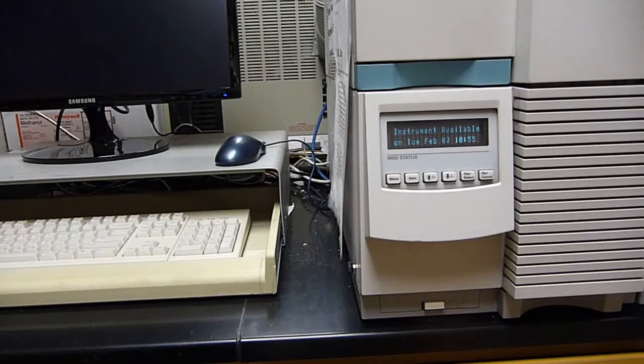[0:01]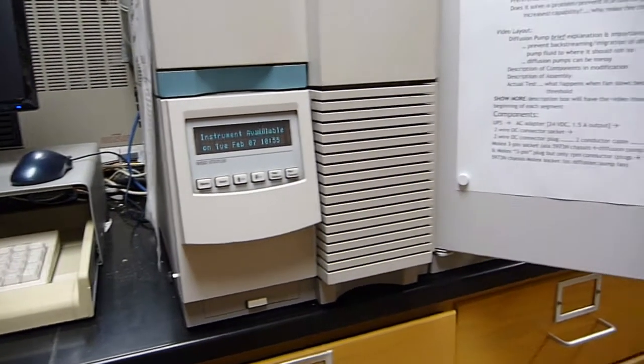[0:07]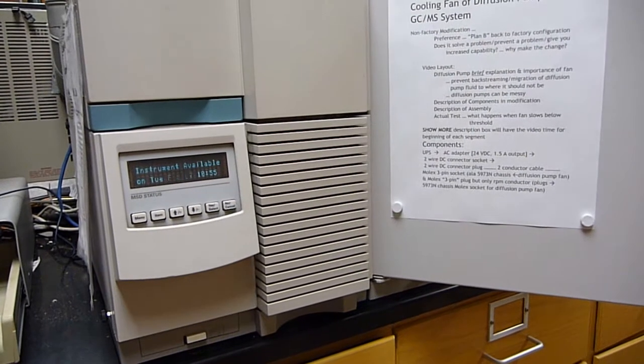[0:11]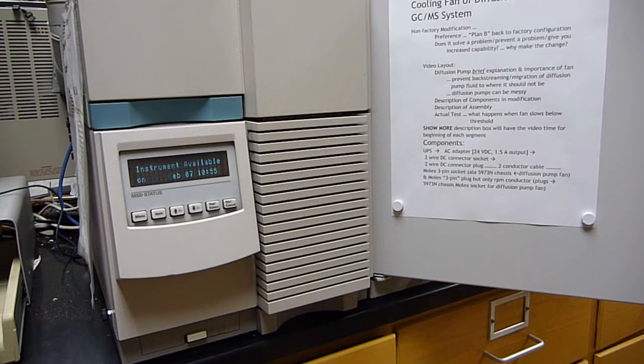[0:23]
This is our 5973 GC mass spec system, and this video is a more comprehensive description of a modification done over a decade ago in order to make the cooling fan for the diffusion pump more reliable and to help in the event of a power outage.
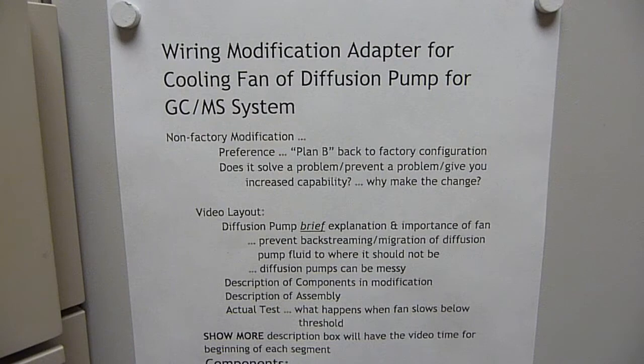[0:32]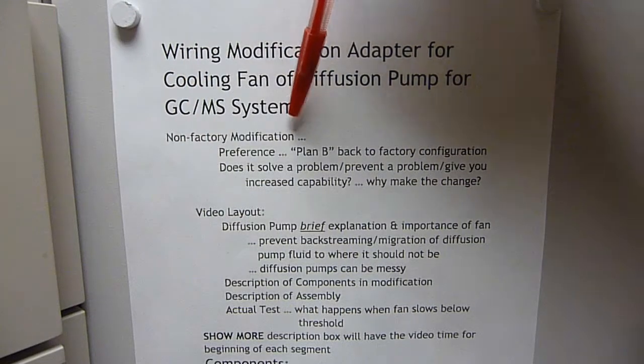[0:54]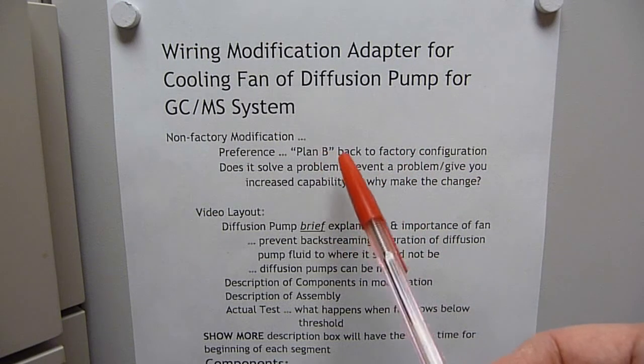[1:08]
So this modification is a wiring adapter that supplies the power to the cooling fan for the diffusion pump and also lets the instrument know what the RPM speed of the fan is. It's a non-factory modification, and the preference here is if you're going to do a non-factory modification, have a plan B in case the modification doesn't work out. And so the plan B is to be able to go back to the factory configuration.
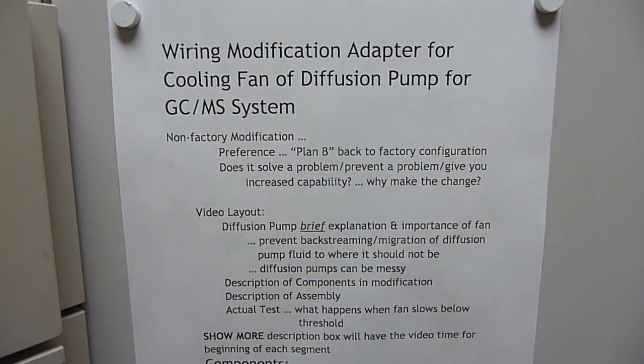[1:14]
And with any sort of a change or modification, we want to solve a problem or prevent a problem from occurring or give us increased capability. That's why we're making the change.
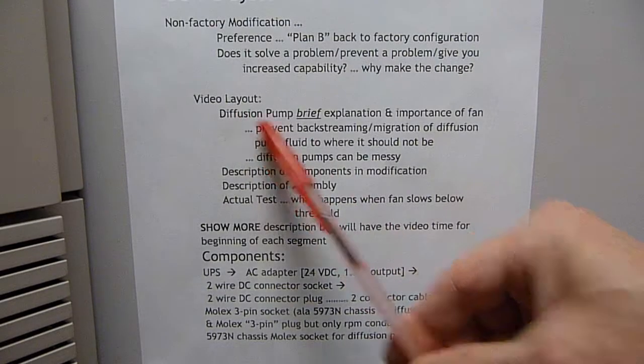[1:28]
The video layout is a brief explanation of a diffusion pump, followed by a description of the components used in the modification and the assembly of that, and then an actual test of what happens if the fan slows down below a certain threshold, and we'll see that the heater kicks off on the diffusion pump.
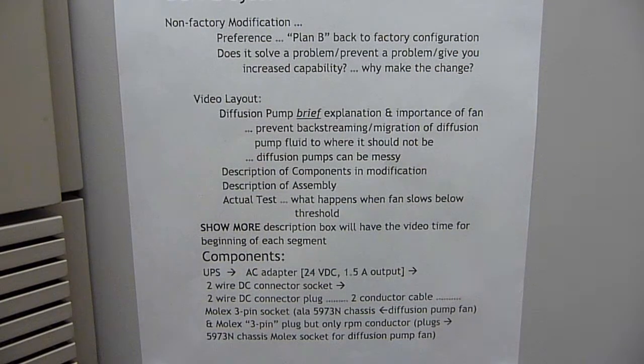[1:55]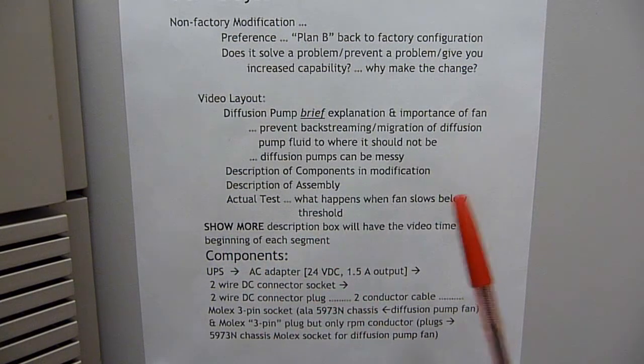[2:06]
And to make the video more user-friendly, in the show more description box on YouTube, there'll be the time of the video for when these different segments start. So you don't have to watch the whole video every time if you don't want to.
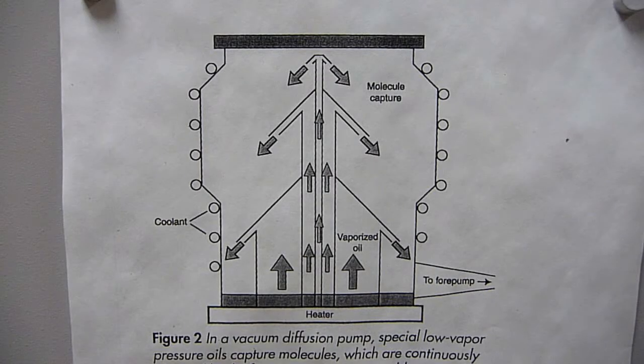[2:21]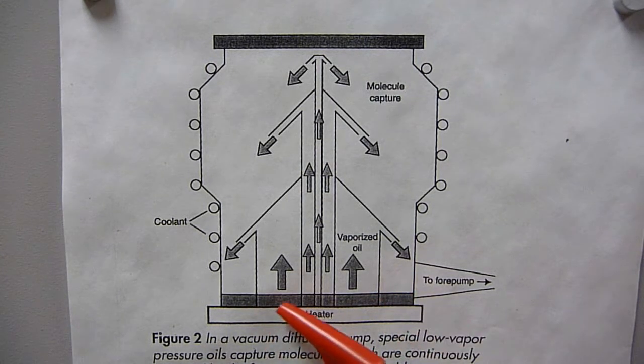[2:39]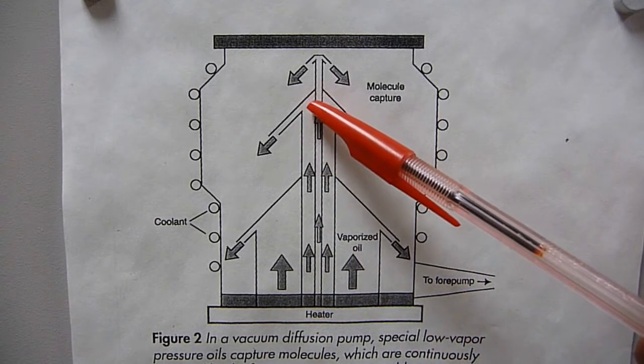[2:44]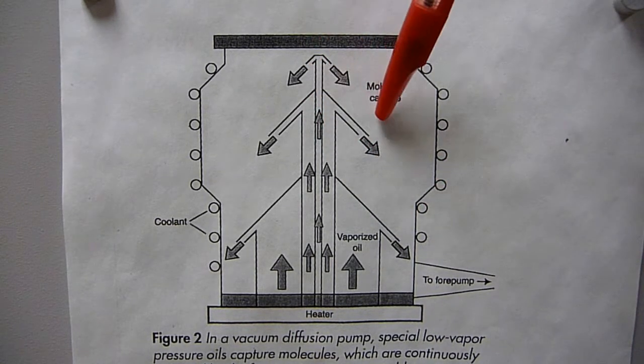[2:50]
All right, so diffusion pumps are over a century old in design, and the first ones didn't have any moving mechanical parts. This one obviously has a moving mechanical part. It has that fan. Anyway, the oil is heated. The oil vapors come up and they're confined mechanically, and then the oil vapors are directed down into the side, and then on the outside of the chamber they have some cooling, and they condense again,
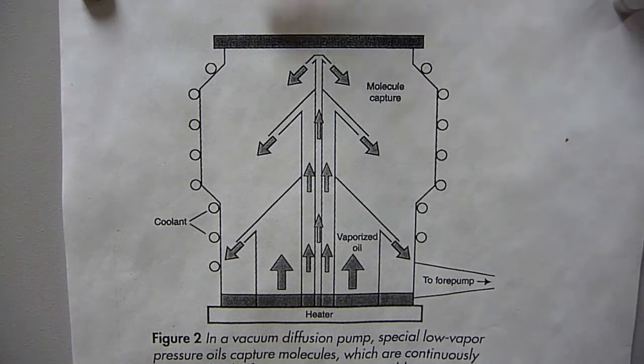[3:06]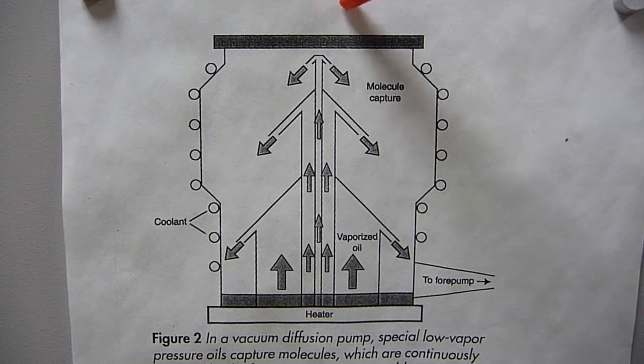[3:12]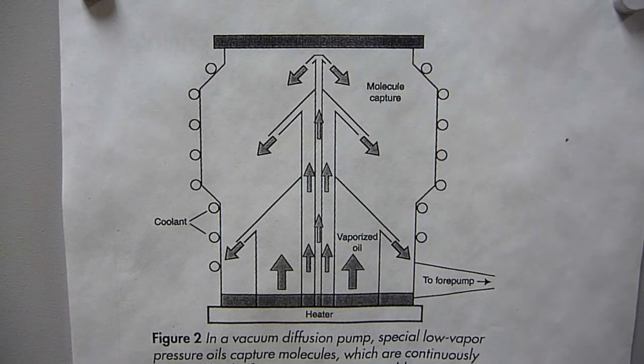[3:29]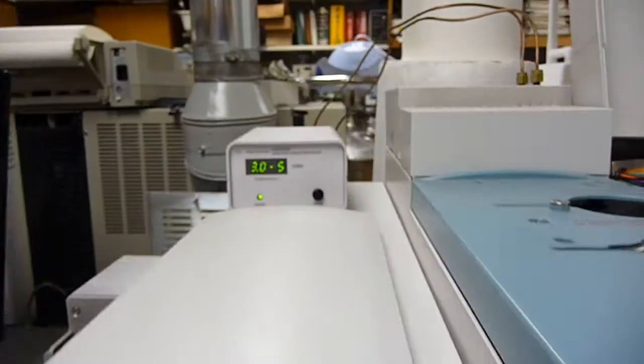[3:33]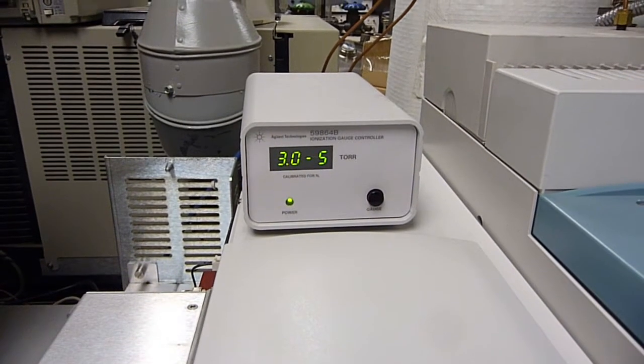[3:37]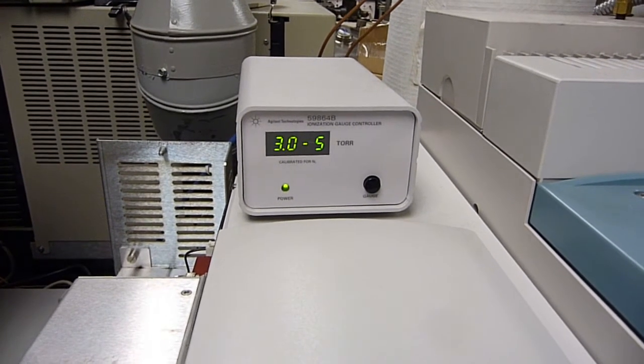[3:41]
and that's how it does the pumping. And so you have a fore pump hooked up here, the rough pump, the mass spec would be up here, and essentially you can think of this as taking it from say 10 to the minus 5 torr here to say 10 to the minus 2. That's the job of a diffusion pump, to generate the high vacuum up here for the mass spec. And in our mass spec, that system is at 3 times 10 to the minus 5 torr. And that's with the flow of about a mil per minute of GC column.
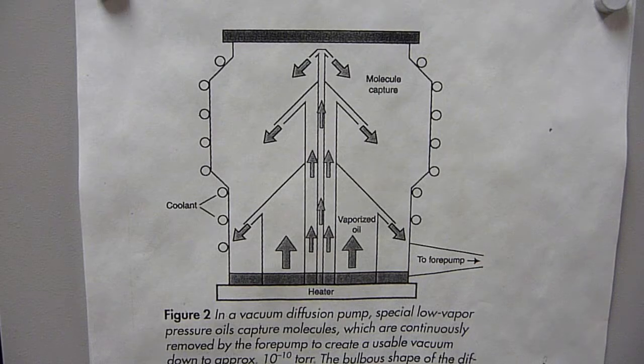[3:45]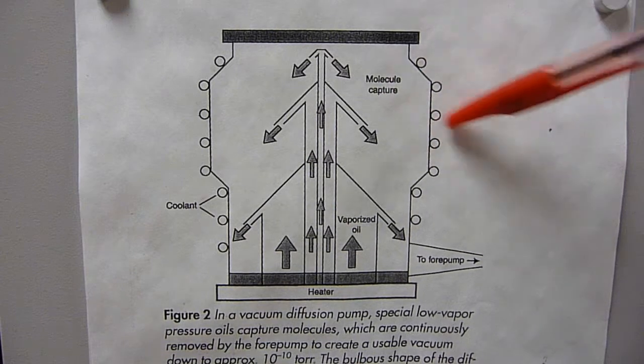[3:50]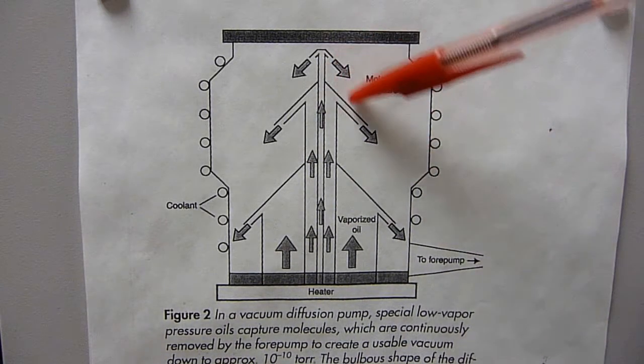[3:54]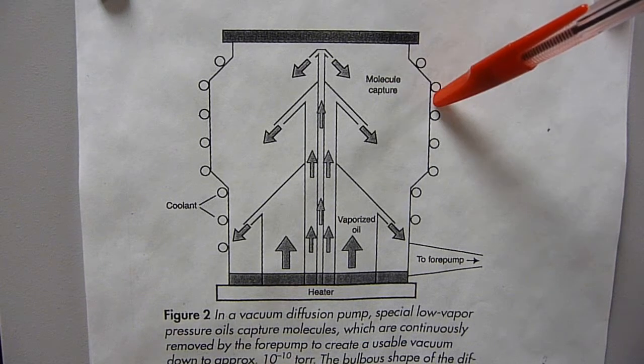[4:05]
This cooling part of the outside is very important. If this is not cool, then the vapors are going to make their way and they're going to go all over the place into the mass spec. It's going to be a mess. So having cooling is very important.
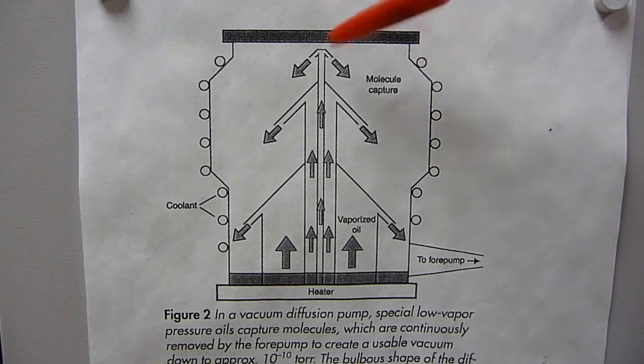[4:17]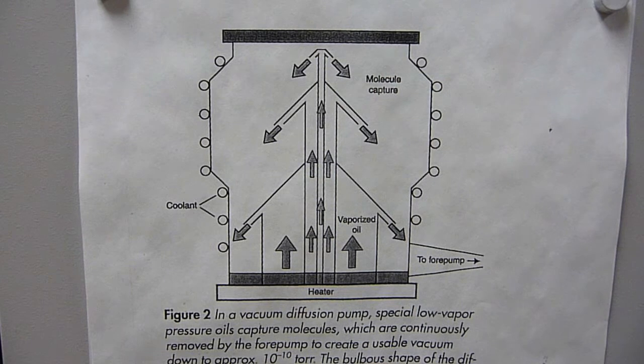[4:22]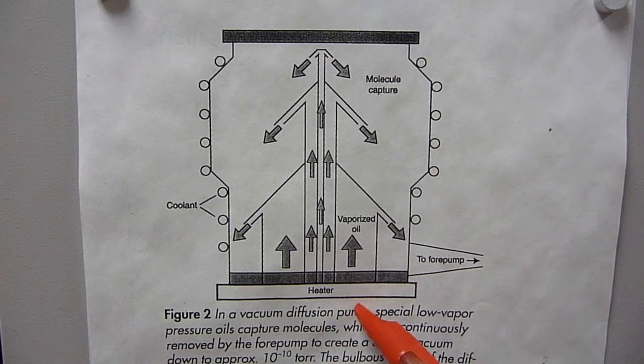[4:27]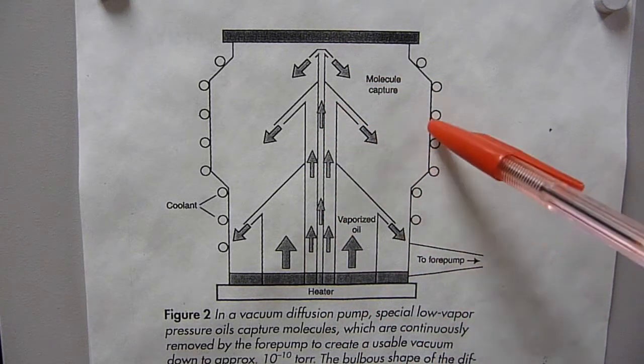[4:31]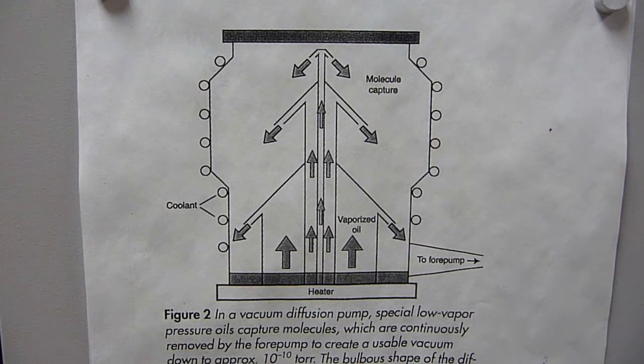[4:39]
So if you have water cooling and the water's flowing all the time, that's the way they did it in the early 20th century. Nowadays you have air cooled and you don't need water flowing. But if the electricity is cut and that cooling fan dies, the heater is still nice and hot, you're still generating those vapors, and now you may not have sufficient cooling, and so you could have migration of the diffusion pump oil into the mass spec. You do not want that ever to happen. Never, ever, ever.
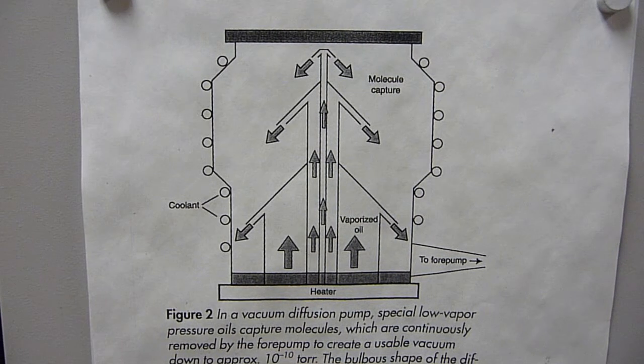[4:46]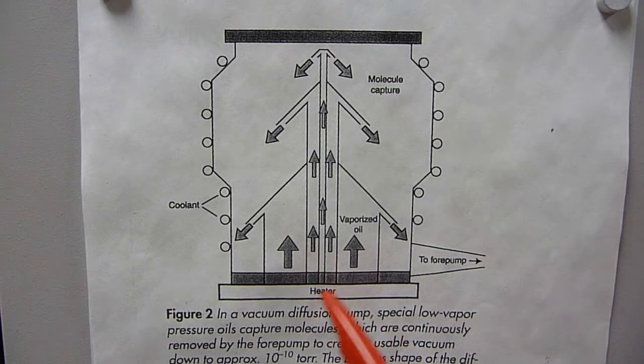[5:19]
So since cooling is mission critical for a diffusion pump to operate safely, reliably, and robustly, it's nice to have some sort of a backup scheme. And what the wiring harness adapter does is let you operate the fan alone via UPS if the power gets cut to the rest of the instrument. There's also a separate UPS for the rough pump. So while the heater is cooling down, we're not going to have diffusion pump oil migrating to places where we don't want it. And so let me describe the components of this adapter.
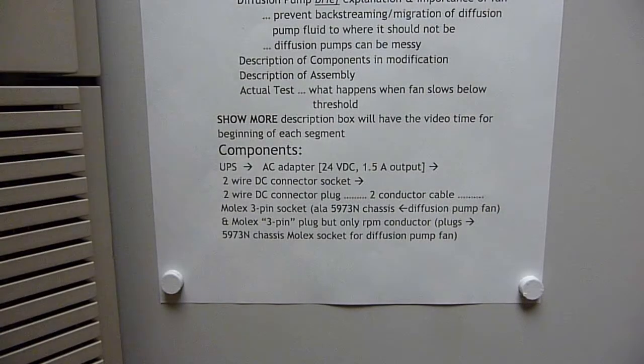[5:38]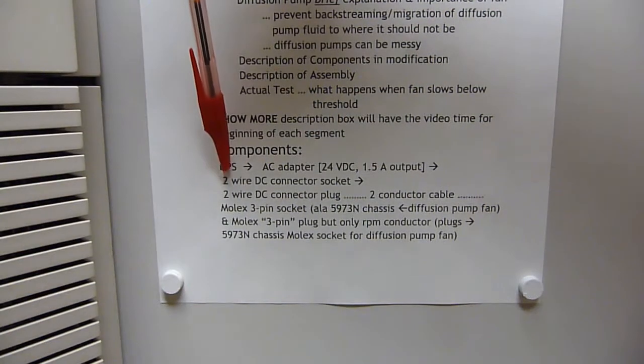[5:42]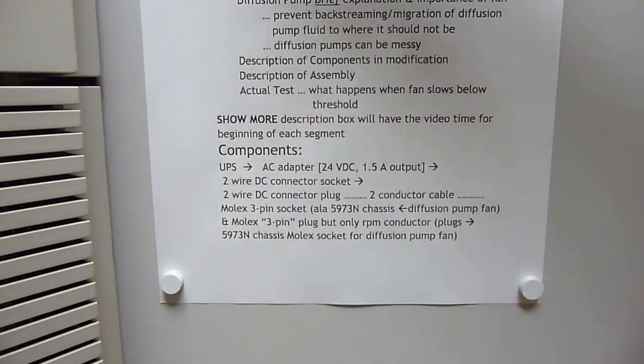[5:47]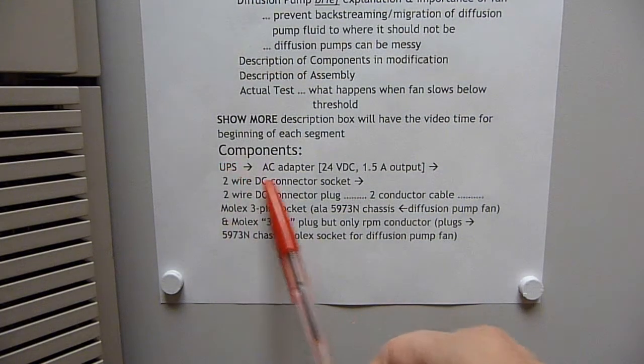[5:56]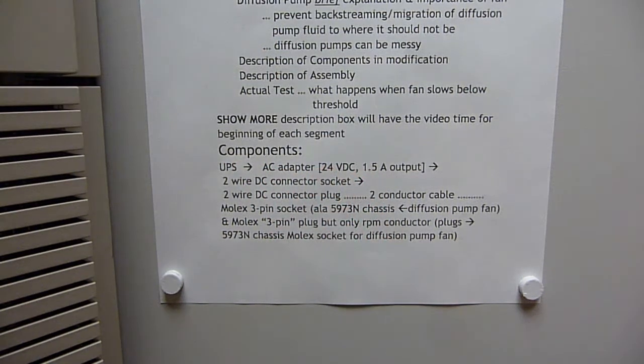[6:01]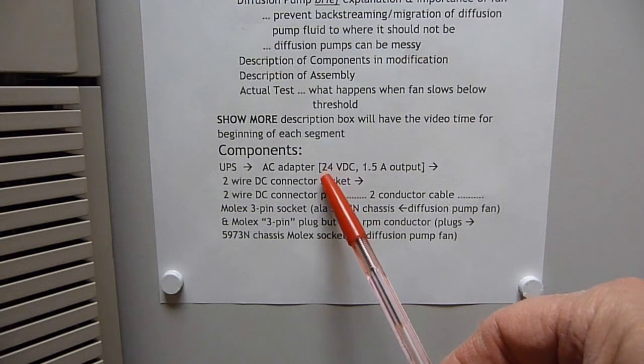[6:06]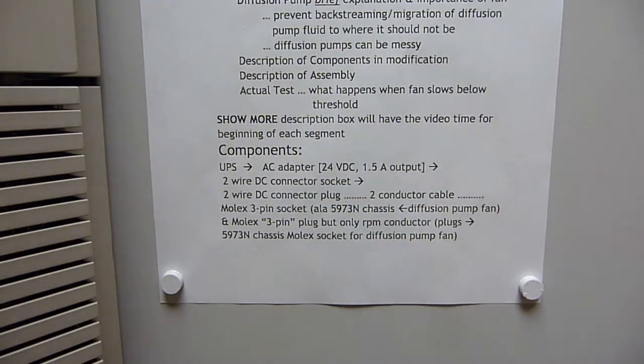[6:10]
A quick overview of the components used in this modification. We have a UPS, right? That will provide power in the event that the AC power to the room is terminated or cut off for some particular reason. The UPS is then connected to an AC adapter, some people call them wall warts, and that AC adapter has a 24 volt DC output, 1.5 amps.
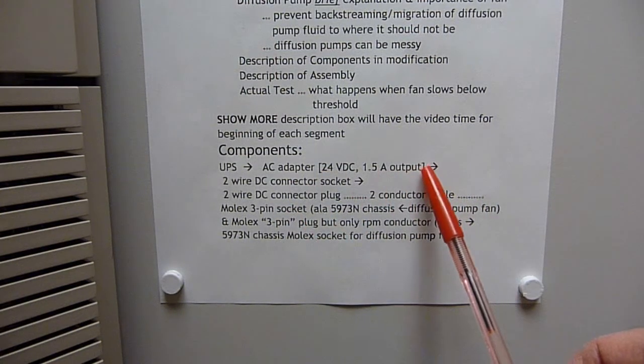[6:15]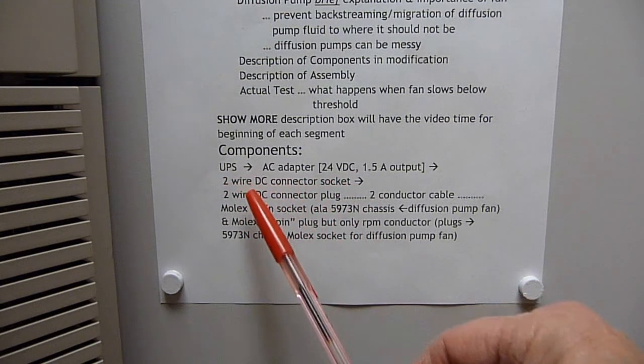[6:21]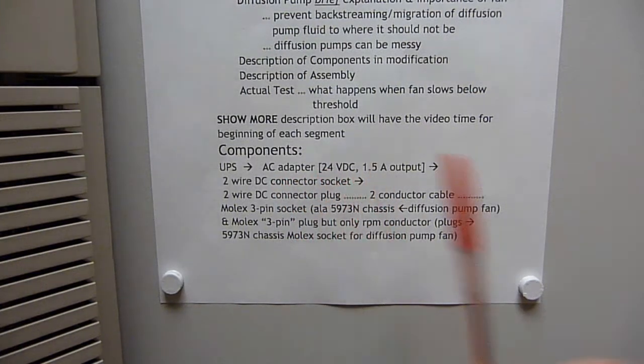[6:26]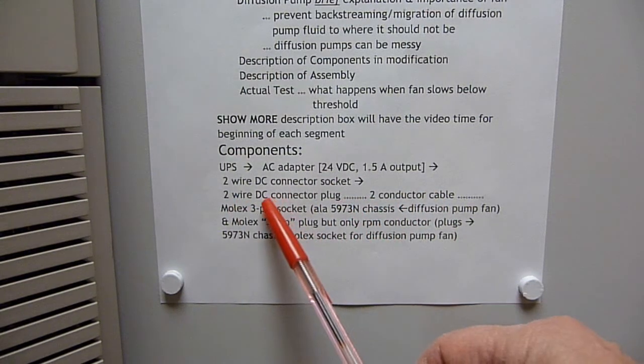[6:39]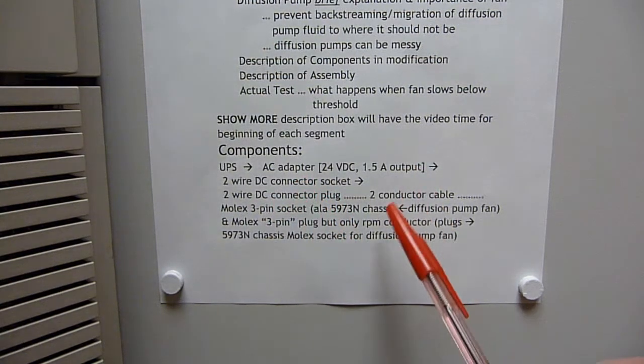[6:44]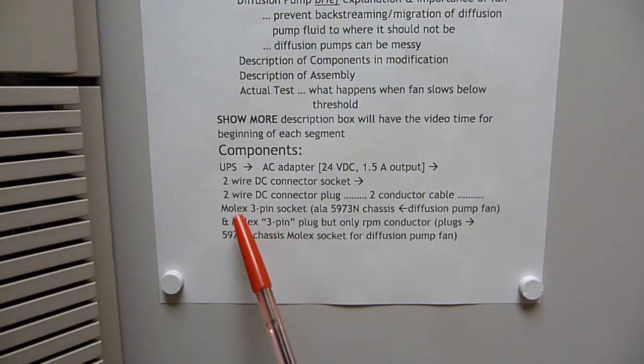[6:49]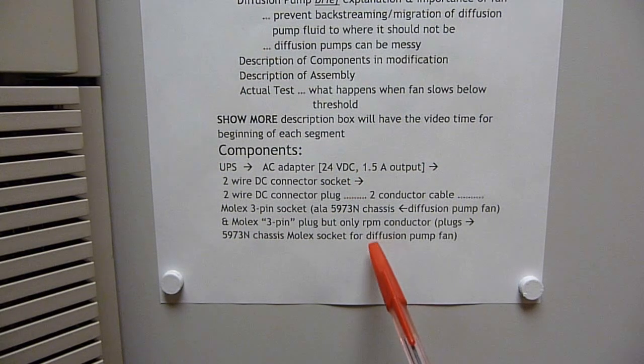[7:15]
And then on the output cable, we've spliced in a two-wire DC connector socket. Now, there's a separate two-conductor cable, and this is what the modification is basically about. At one end, we have a two-wire DC connector plug that fits into here. And at the other end, we have a Molex three-pin socket, just like the socket that's in the electrical chassis for the instrument, and also a three-pin Molex plug. This plug is what's going to plug into the 5973 chassis Molex socket. And the only information that the GC mass spec is going to get from that socket is the RPM speed. Is it high enough to keep the heater going?
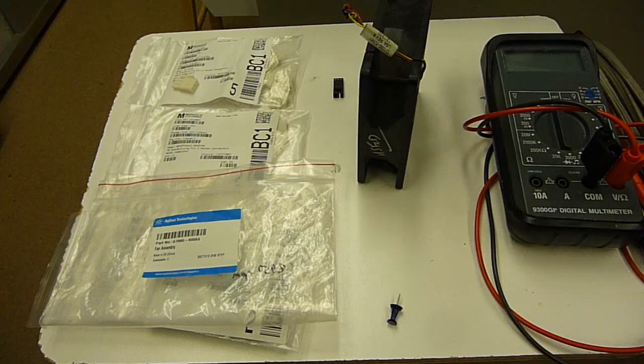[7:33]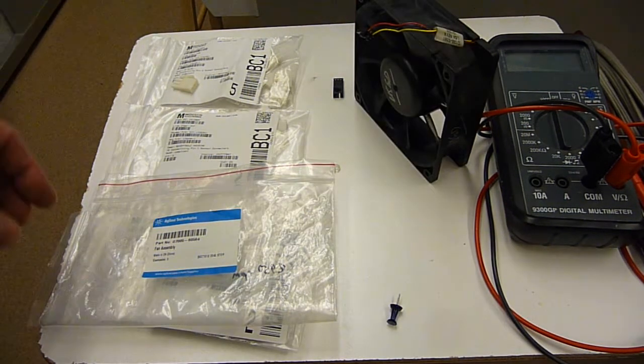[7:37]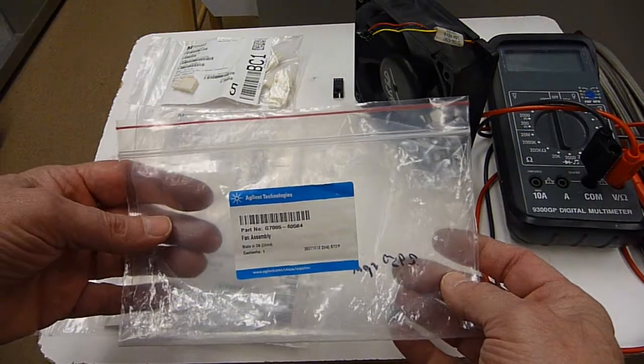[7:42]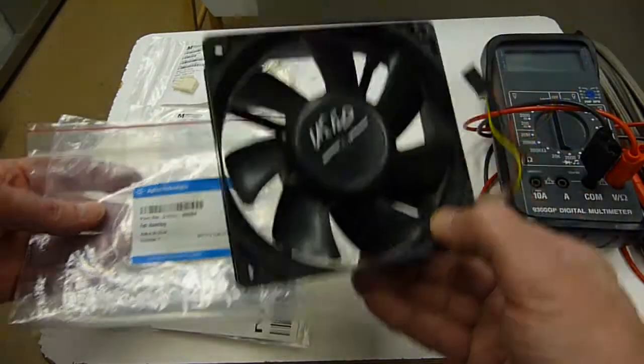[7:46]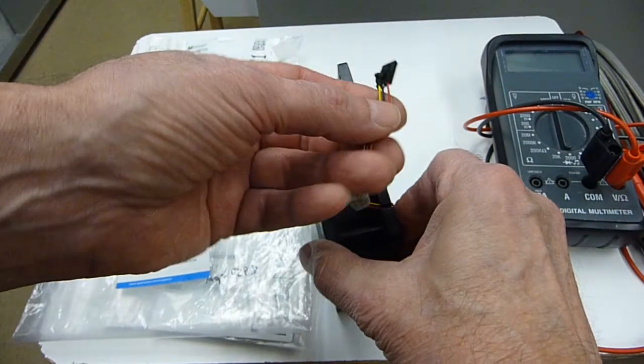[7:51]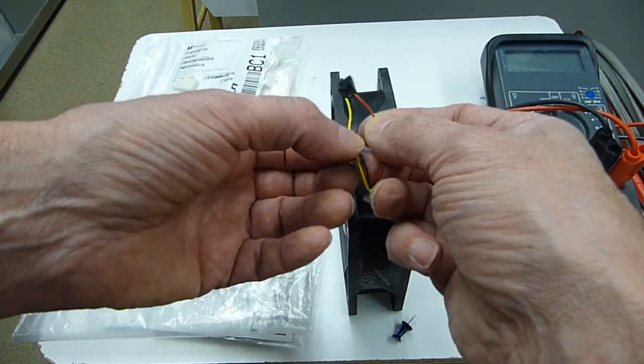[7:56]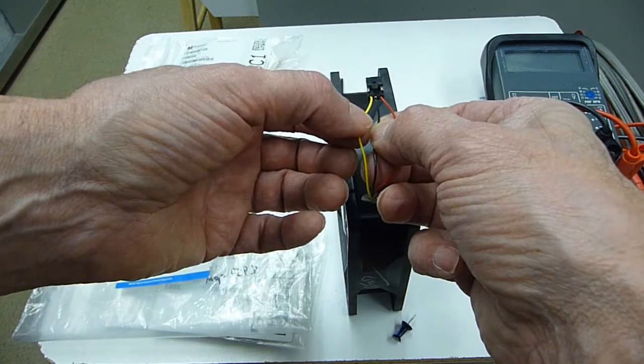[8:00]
Let me start describing some of the components. All right, so this is the fan assembly for the diffusion pump. This is the old one. And at the end of it, it has three leads. 24 volts DC is the red, minus is the black, and the tachometer is the yellow.
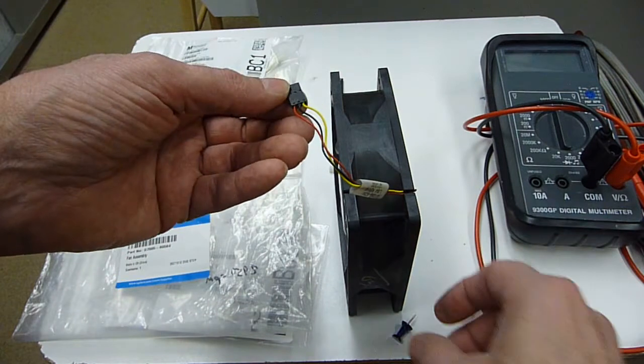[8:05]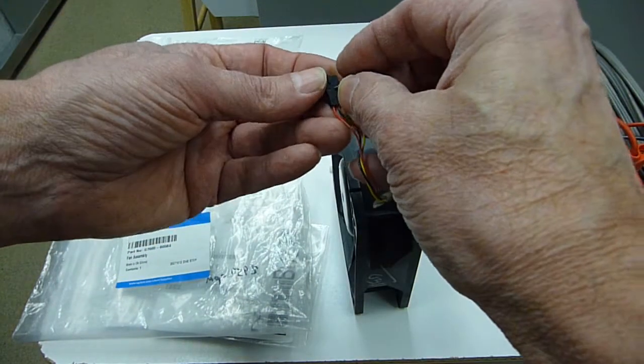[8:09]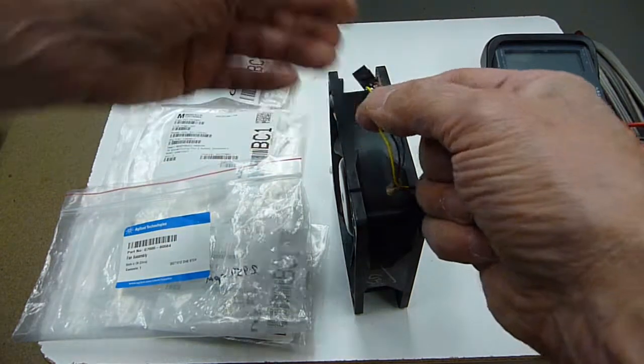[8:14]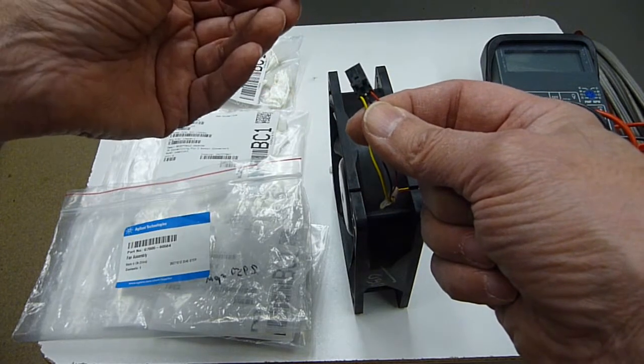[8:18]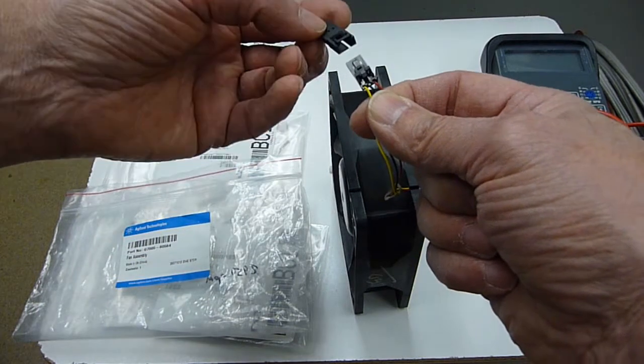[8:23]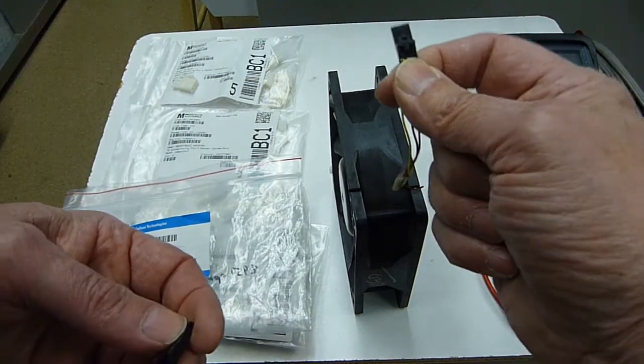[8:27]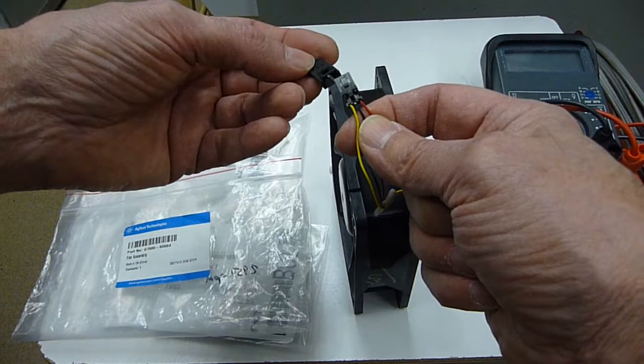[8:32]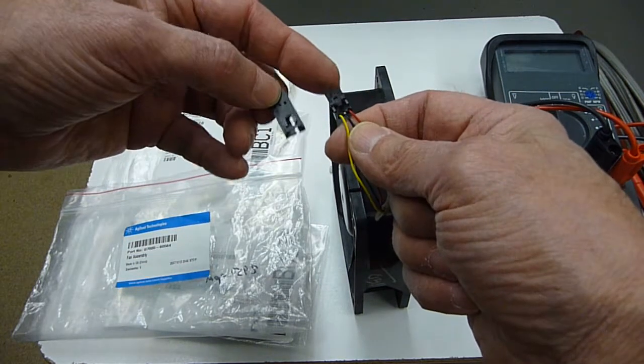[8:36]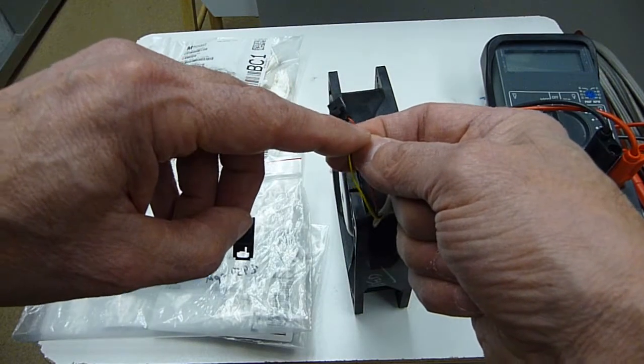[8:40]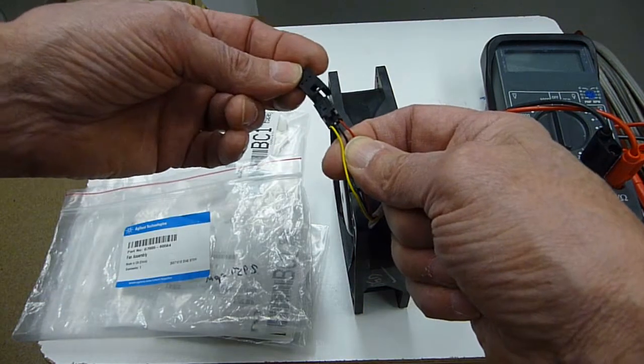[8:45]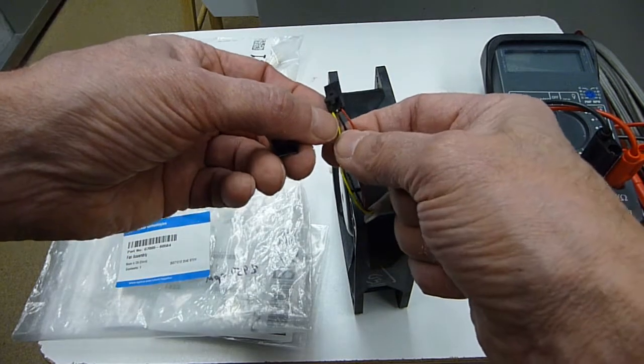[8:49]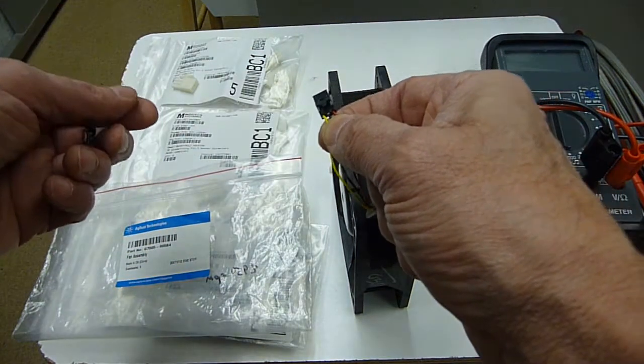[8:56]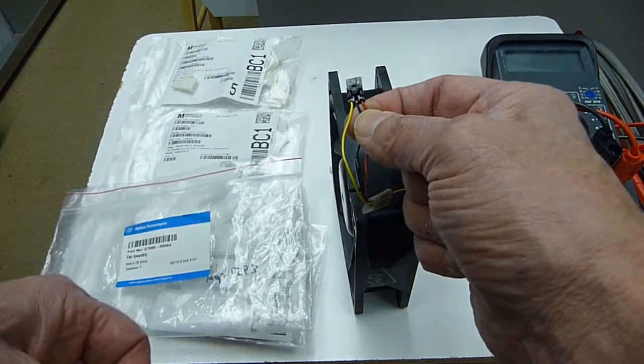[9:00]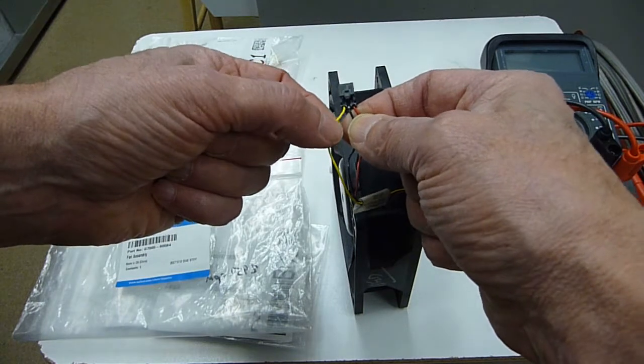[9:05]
You have to be somewhat comfortable with taking the pins out of these things, because what you're going to wind up doing is you're going to take a socket, this would be the socket that's in the chassis, and you're going to make one like you got in the wiring assembly. You're going to use a socket, and you're going to use a plug. What we did is supply, via the AC power adapter, the plus 24 volts and the ground via the socket. And then the plug is going to go into the socket for the chassis, and it's going to provide the information to the GC mass spec main chassis of the RPMs that the fan is turning.
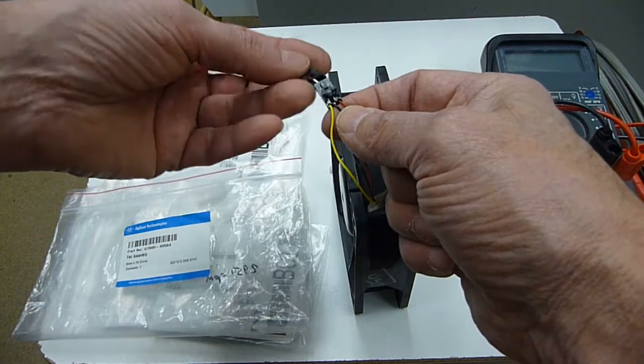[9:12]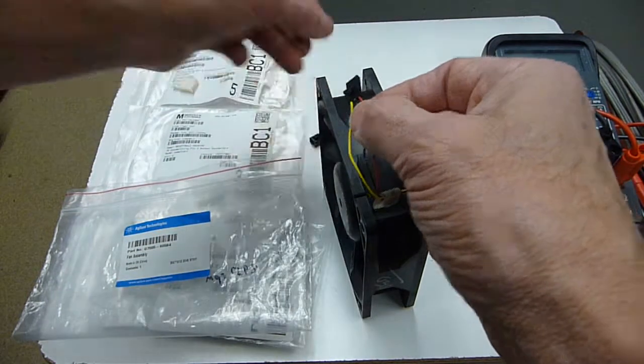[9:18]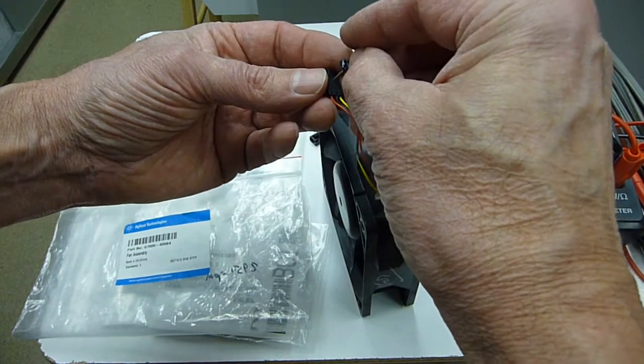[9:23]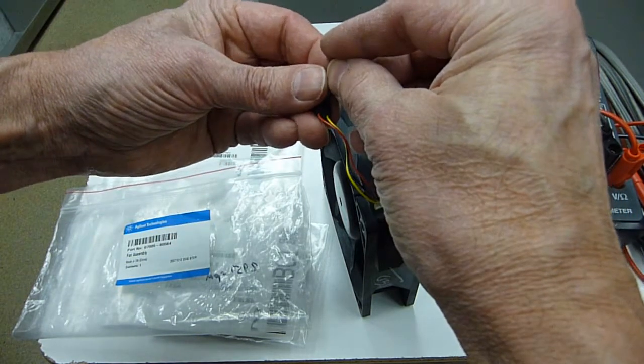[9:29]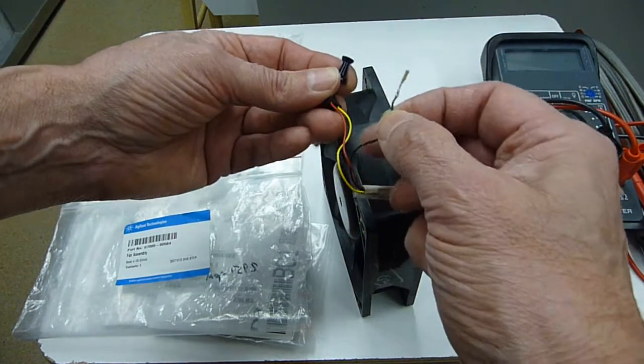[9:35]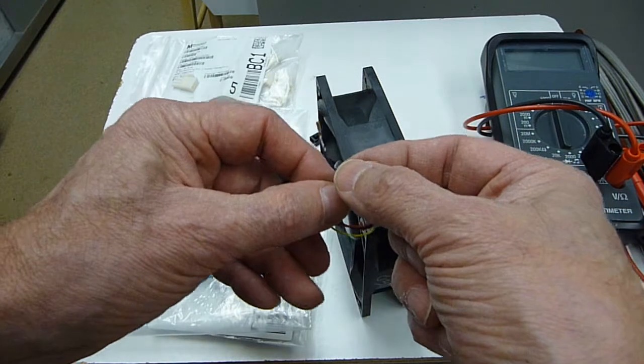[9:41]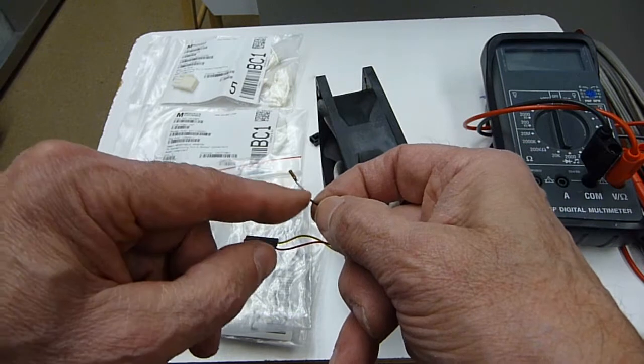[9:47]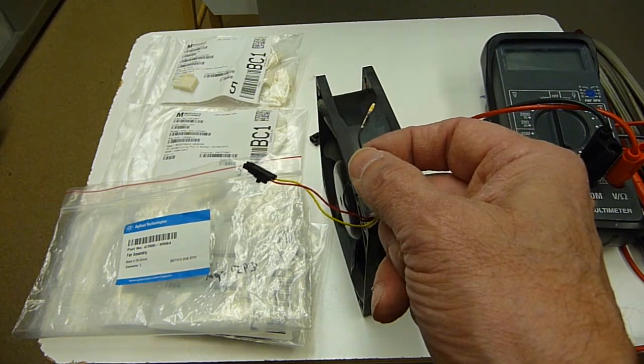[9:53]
So you have your typical Molex connectors, and the Molex connector has pins. Let me take one out. One way is to, and this is just for demonstration purposes, because we're not going to be using this fan again, the pin comes out like this. So if you're uncomfortable with putting a pin at the end of a wire like this, you're going to have to seek assistance from somebody who is comfortable.
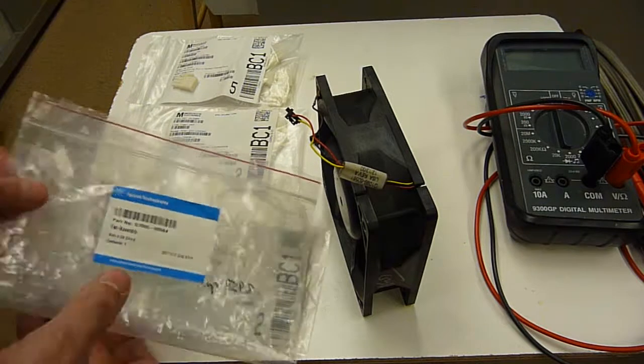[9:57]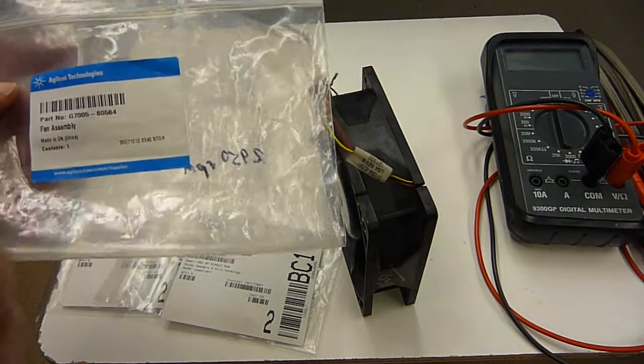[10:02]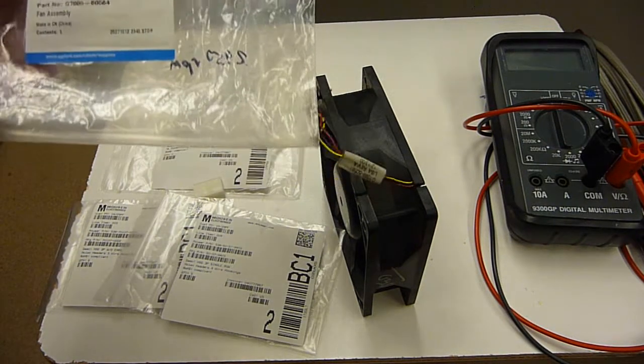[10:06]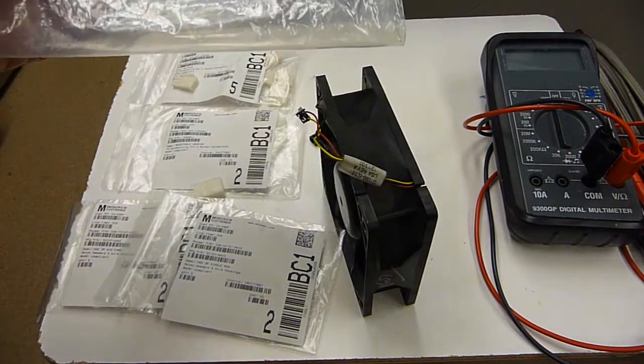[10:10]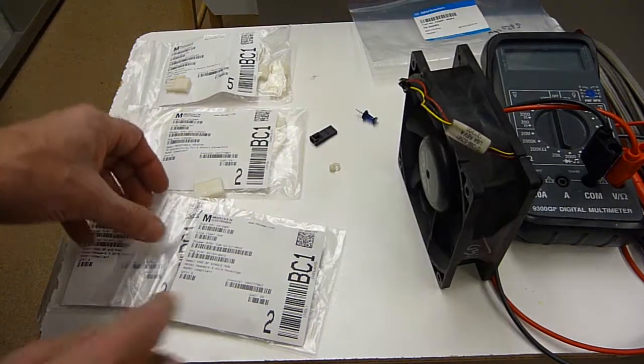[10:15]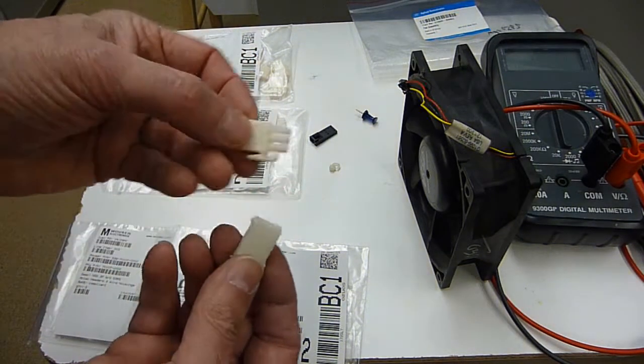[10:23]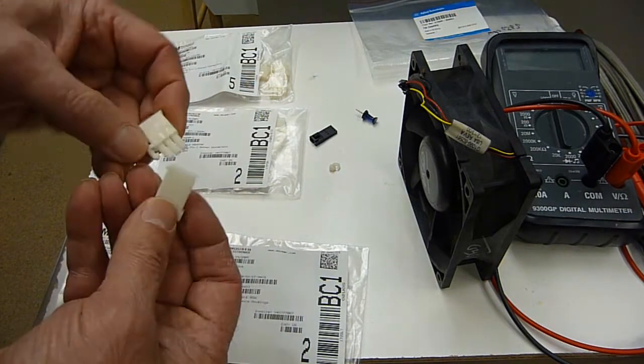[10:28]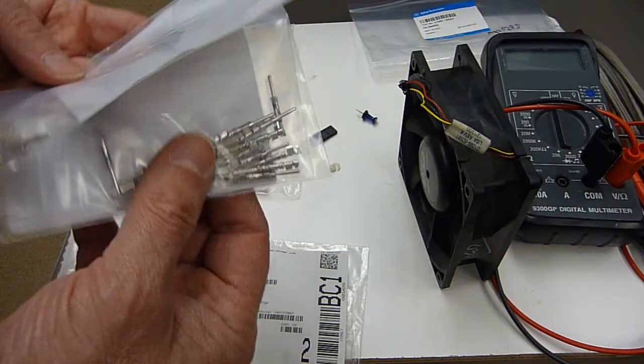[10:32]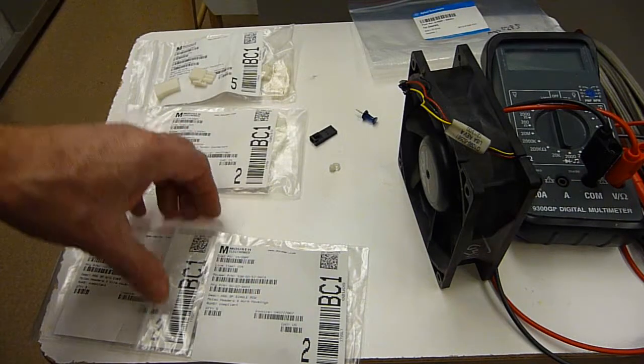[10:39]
All right, so this is the part for the fan. It's good to have one on hand. These will last about a decade, maybe somewhat longer. This is mission critical for the GC mass spec system if you have a diffusion pump for high vacuum. And then the connectors, these typical DC connectors are like this. This would be a plug. This would be a socket. Again, the actual connection is made by pins and sockets like these. So again, if you're uncomfortable with doing that, find somebody who is comfortable.
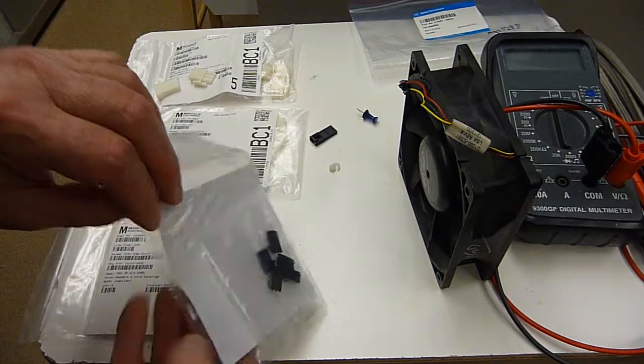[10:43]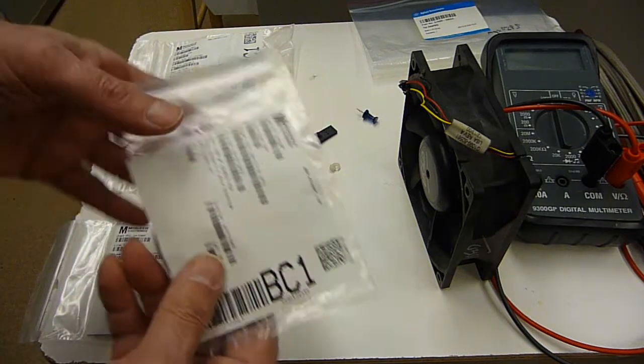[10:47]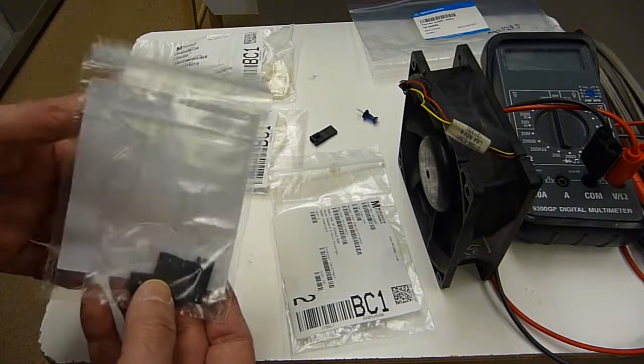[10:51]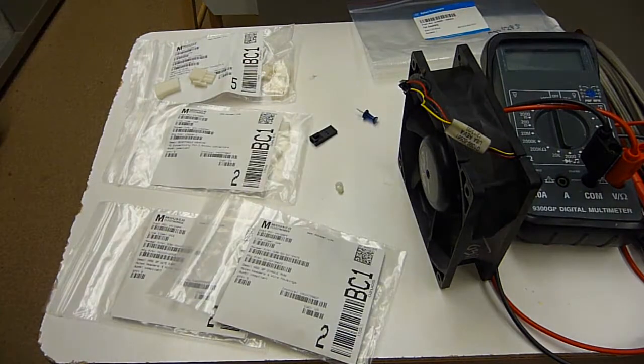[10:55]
The Molex connector, in a five pack, they're certainly less than a dollar a piece. Socket. I got the components from Mouser. They're a pretty wide-ranging electrical supply outfit. And then the cable, we'll take a look at that in the finished assembly.
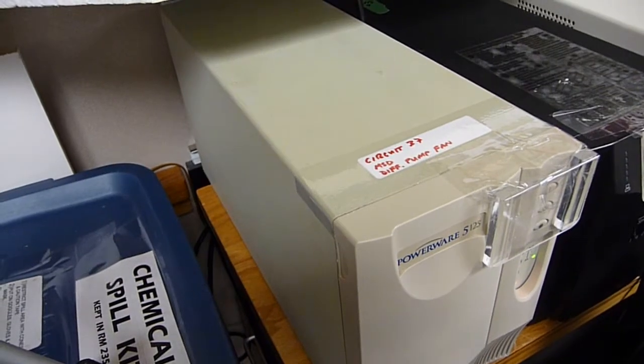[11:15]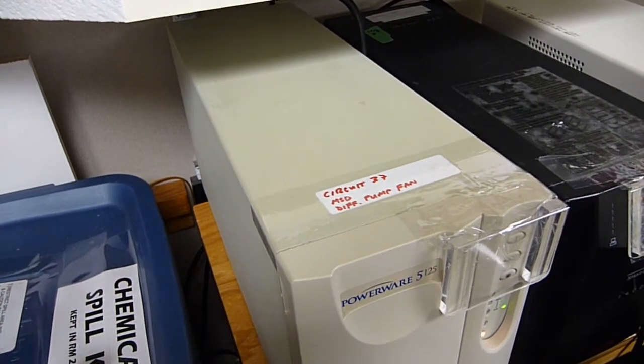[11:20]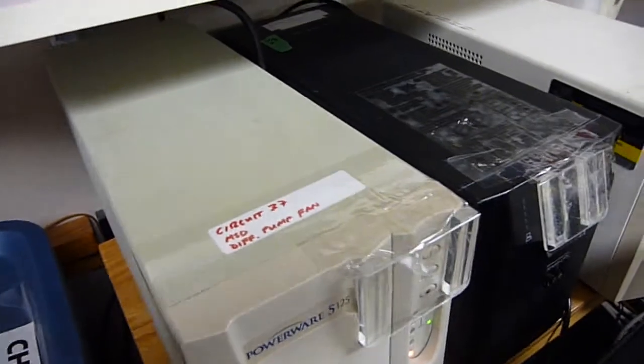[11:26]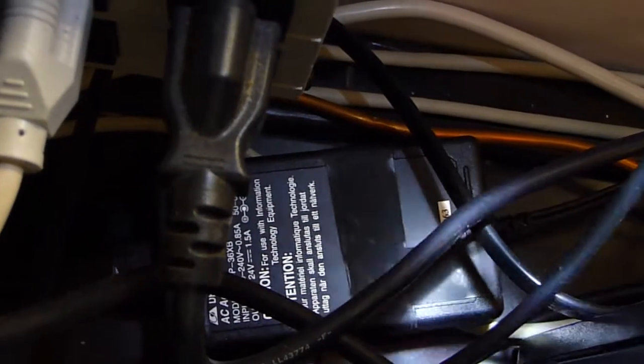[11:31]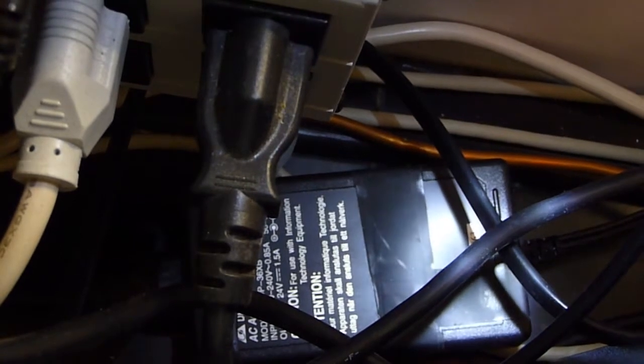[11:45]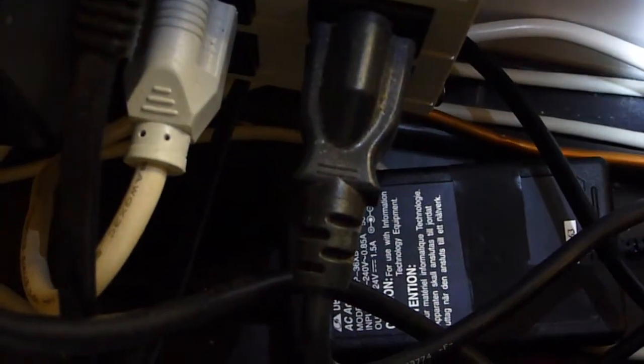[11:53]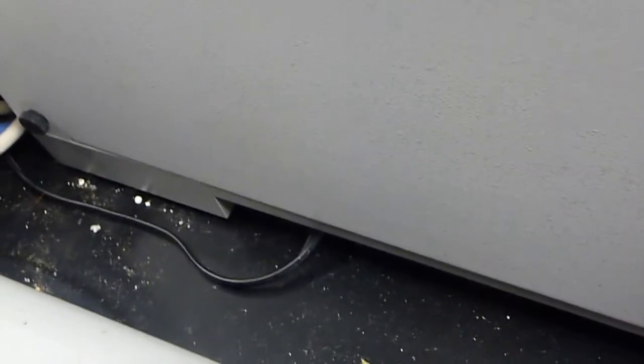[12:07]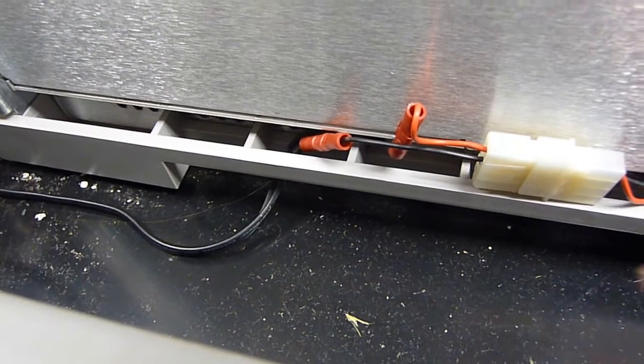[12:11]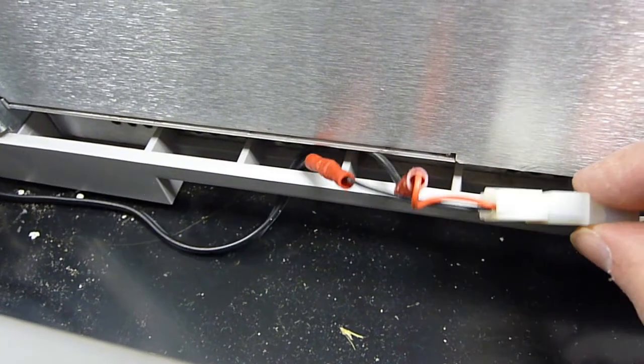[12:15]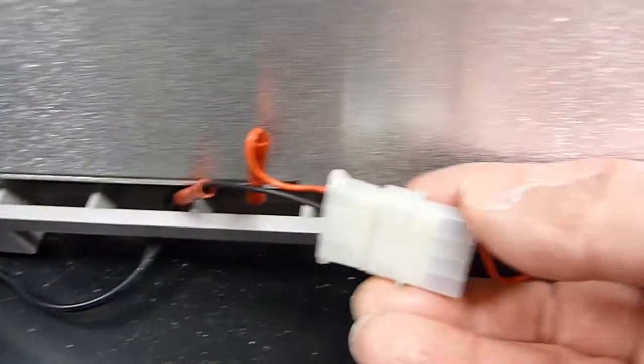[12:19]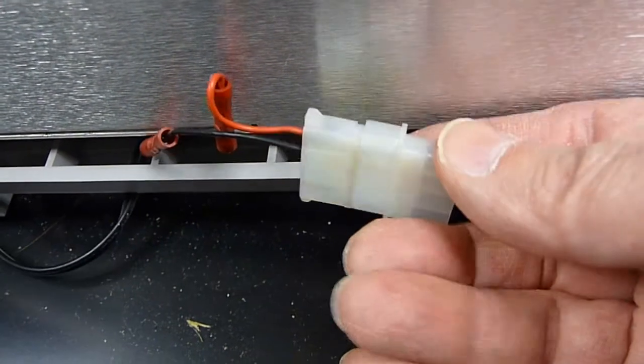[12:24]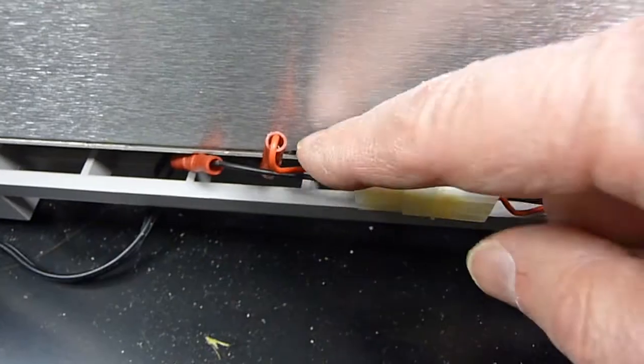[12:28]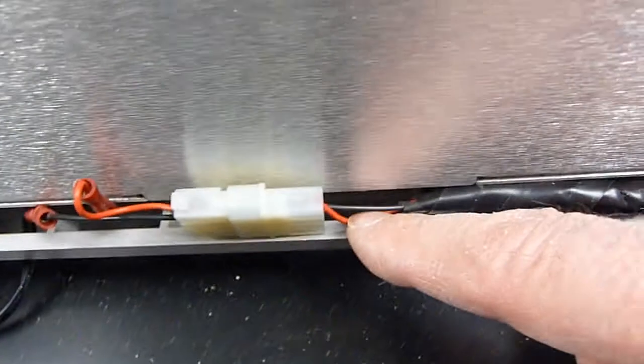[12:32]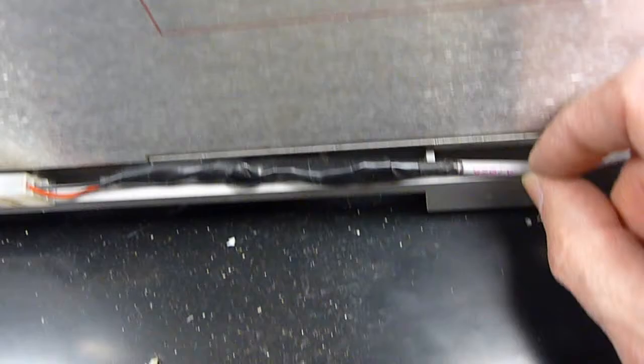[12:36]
And on the output side, we have an output cable, and it makes its way by the side of the mass spec. So let me take the side panel off. Side panel is off, all right. And the ends have been modified so that they fit into a typical DC power connector assembly. We have plus 24 volts, neutral, plus 24 volts. And so this is a typical, at least a two-conductor cable.
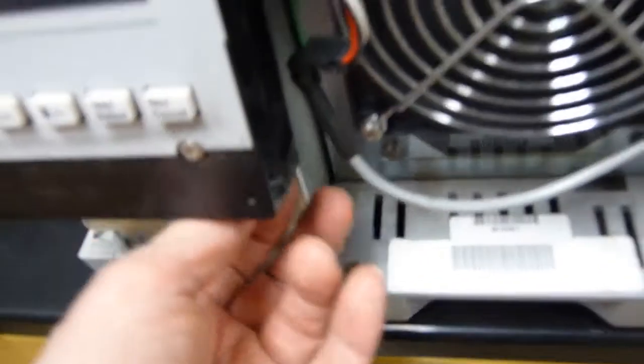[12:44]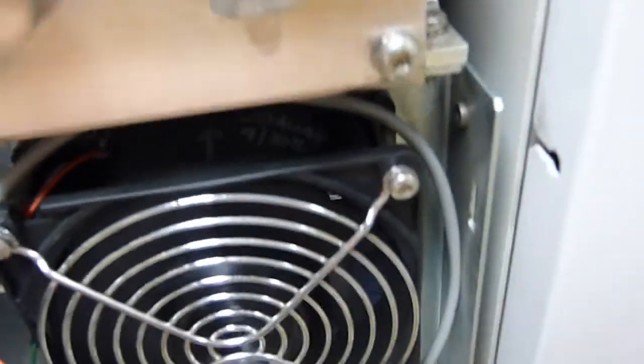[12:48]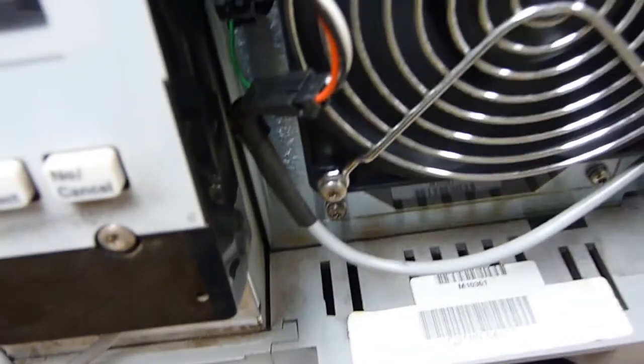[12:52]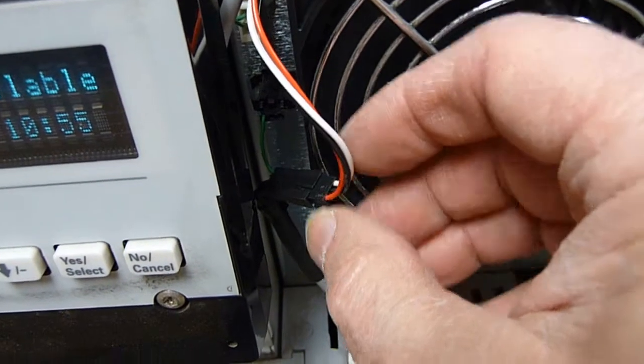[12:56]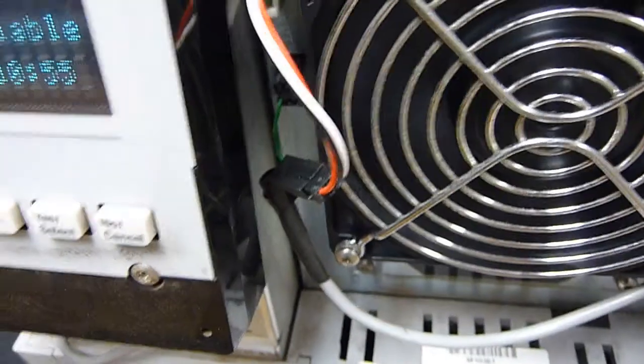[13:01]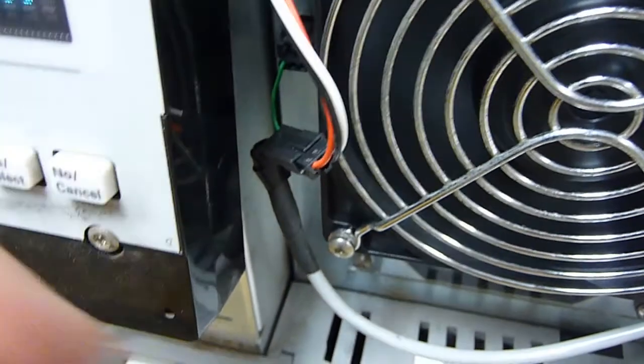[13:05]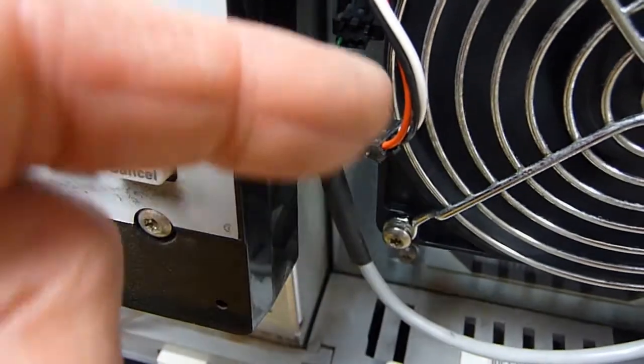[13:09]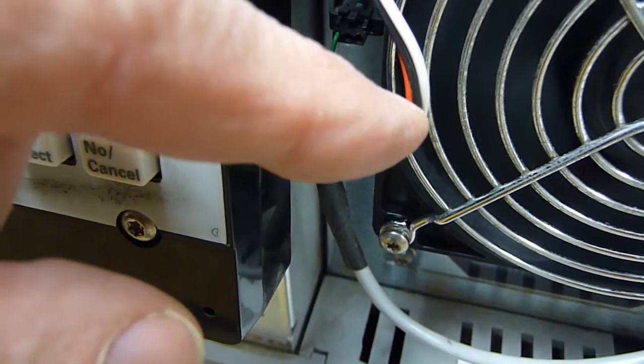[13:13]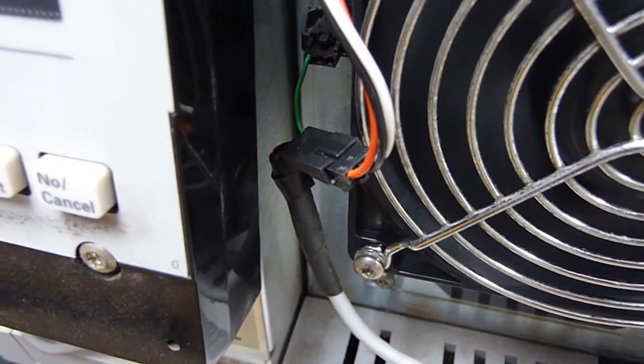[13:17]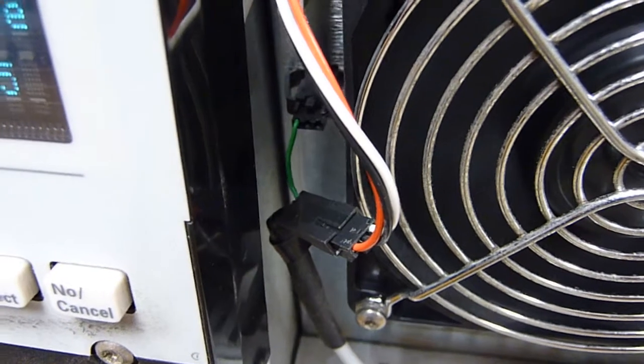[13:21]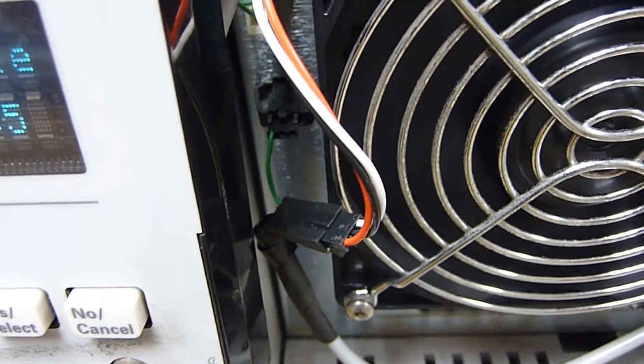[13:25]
Makes its way around here, and then actually loops around the fan assembly. And so the fan assembly, as it is shipped via Agilent, terminates in this connector. So red is 24 volts. Black is neutral, white is tachometer, RPM. And let's zoom in as to how this plugs in to the chassis assembly socket.
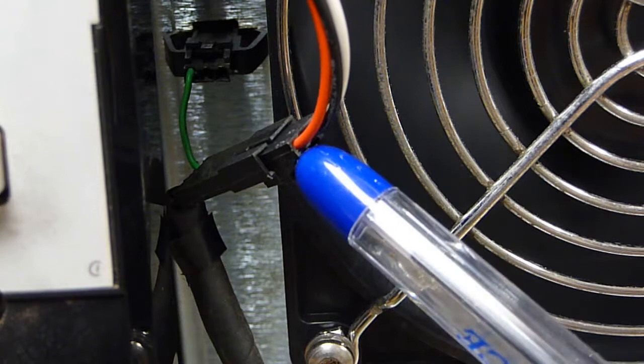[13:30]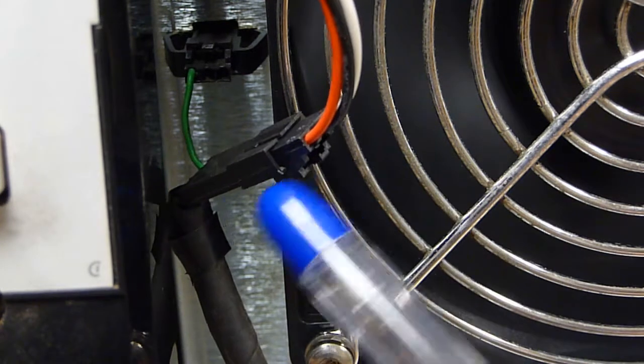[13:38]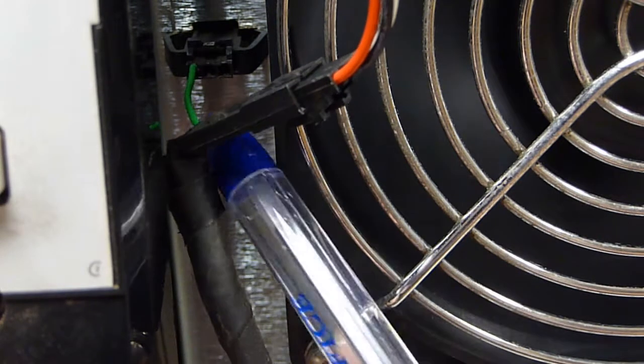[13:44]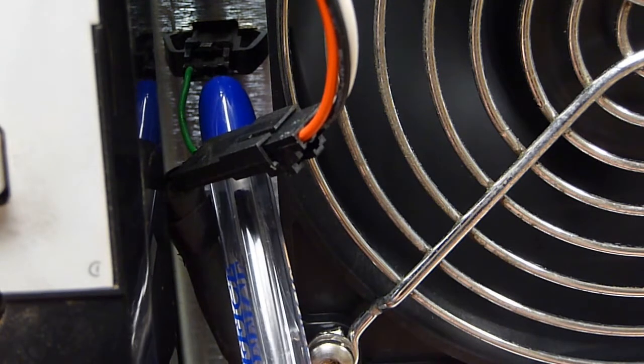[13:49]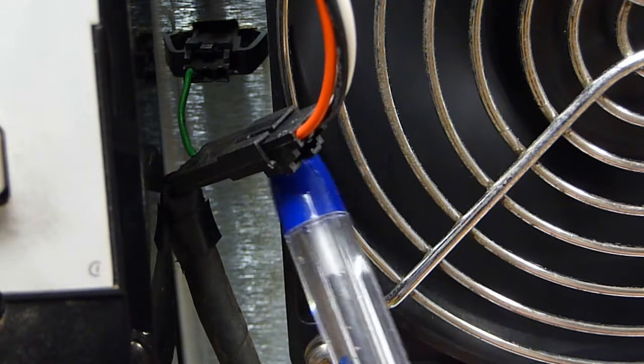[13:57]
Okay, so this is the plug as the fan from Agilent ends. This is our socket on our homemade cable assembly. And then right back here where the green wire goes in, that's to our assembled plug, and then right back here is the socket. And so the purpose of the green wire here is to make connections to the white wire to give the RPM information to the main unit electronics.
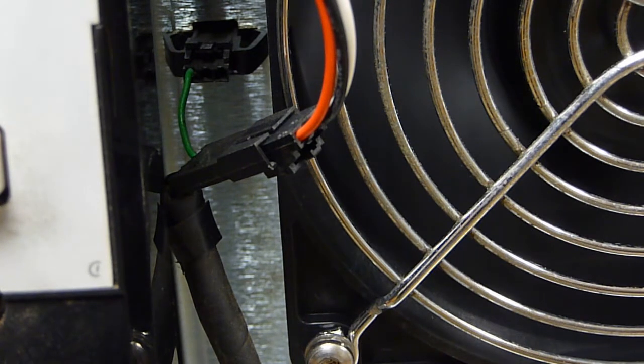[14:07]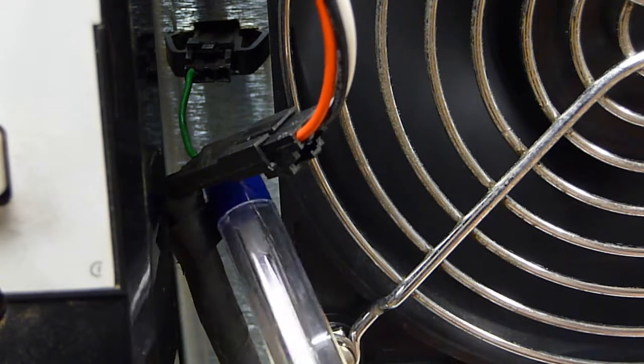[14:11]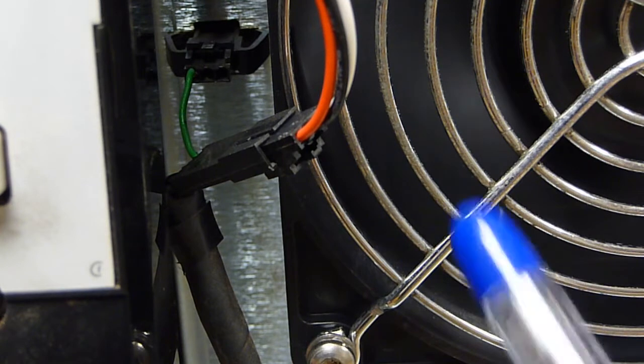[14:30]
If this plug here, the one with the green wire, is taken out of the socket, power is still being supplied to the fan, so the fan will turn and will keep cooling the diffusion pump, but the heater will turn off because the main system electronics are not getting that RPM information. So that's the rationale for going through this non-factory modification, is to keep the fan turning in the event of a power outage. The heater will turn itself off, and the fan will run for certainly long enough to let the diffusion pump cool.
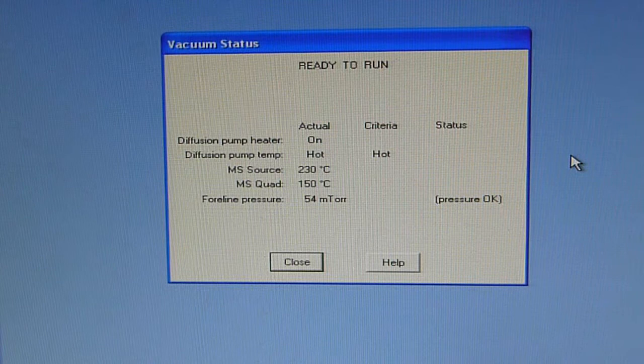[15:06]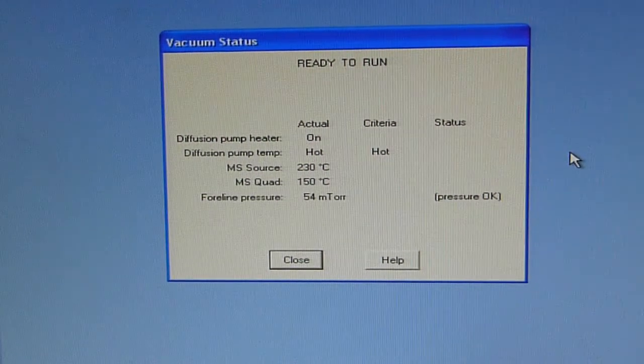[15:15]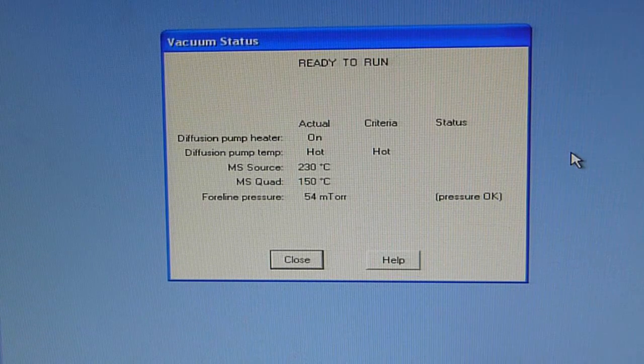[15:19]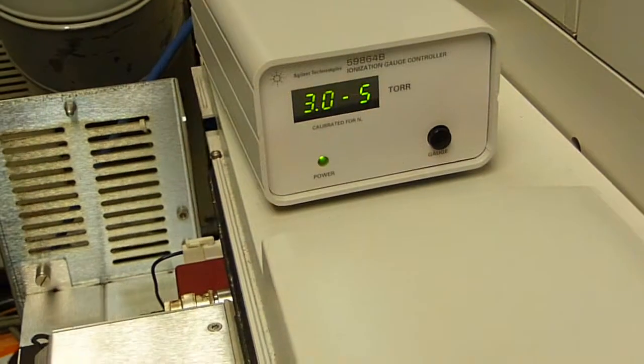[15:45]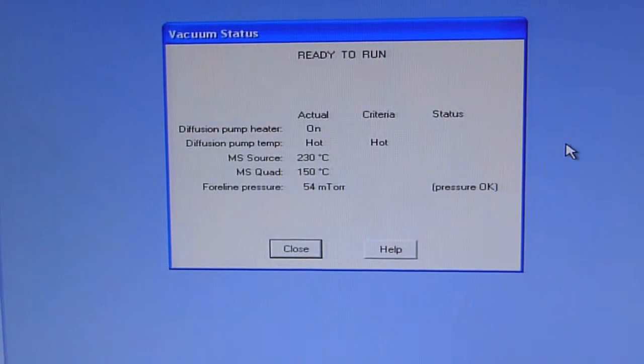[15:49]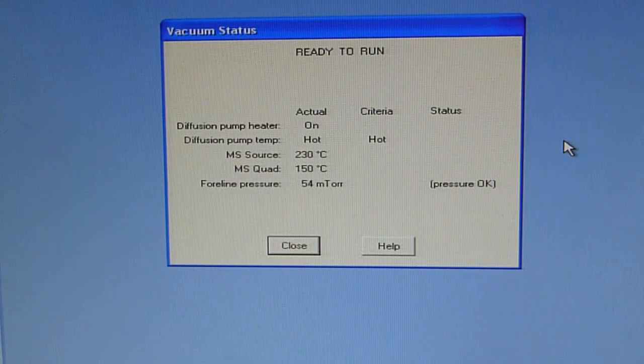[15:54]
All right, and next we're going to test to see what happens if the system gets the information that the speed of the cooling fan drops below some certain level. I'm not sure what the RPM level is. The easiest way to do it is to keep the fan turning, but to unplug that socket that gives the information from the tach to the main chassis. So as it is now, it's plugged in, it says it's ready to run, and if we check the high vacuum, all right, 3 times 10 to the minus 5, let's go back over here, and what I'm going to do is unplug the socket.
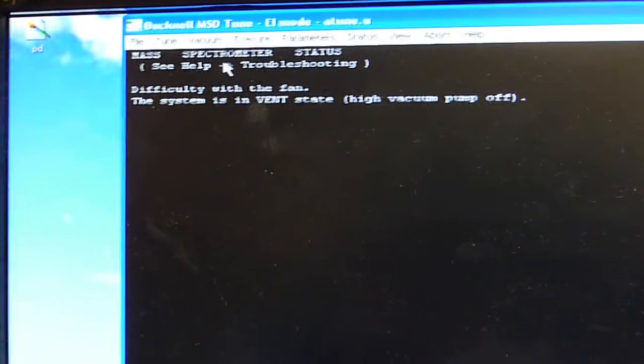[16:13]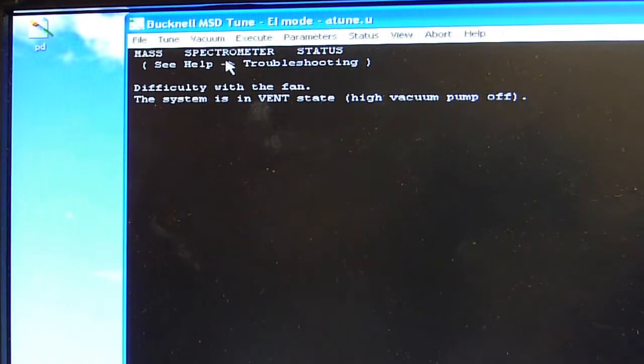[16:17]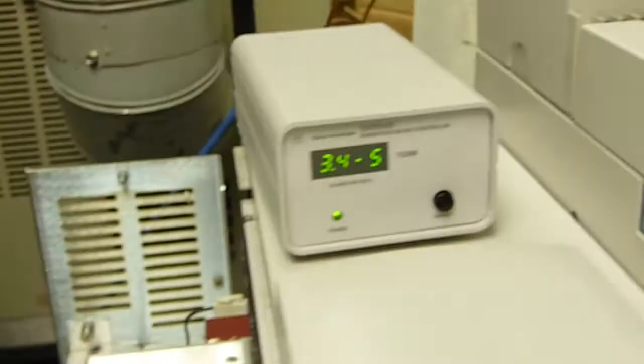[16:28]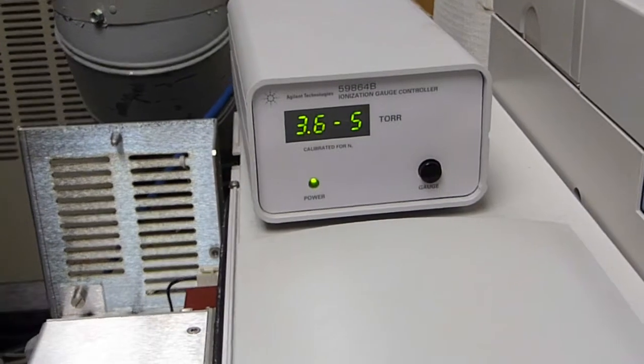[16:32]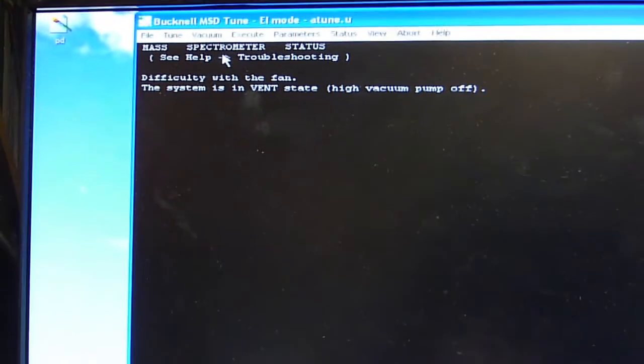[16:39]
So there's still power, and look at that, that's been turned off, and now it says vacuum status, okay, it says system is in vent state, high vacuum pump off. That's what happens when you unplug it. The fan is still cooling, so everything's cool. All right, and you can see with the pump off, vacuum is starting to degrade. Rough pump is still on. So let me plug it back in.
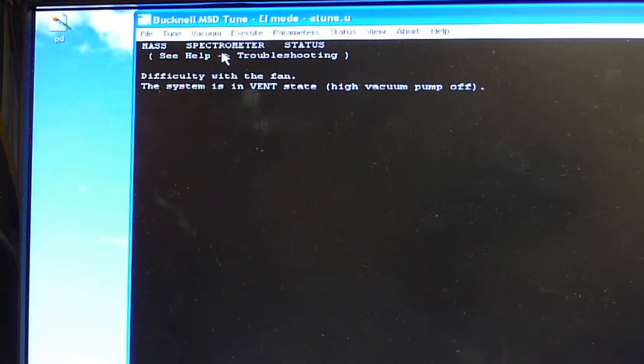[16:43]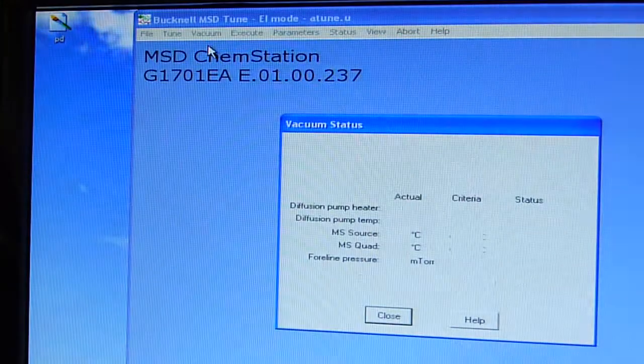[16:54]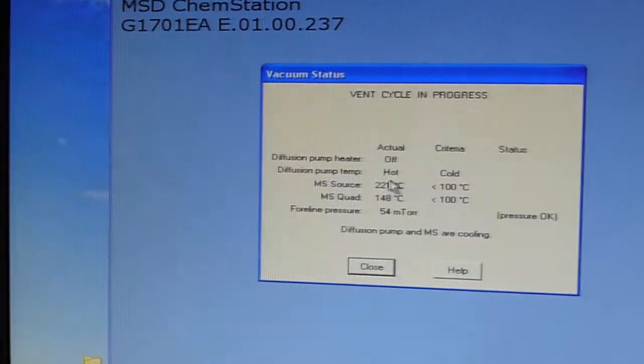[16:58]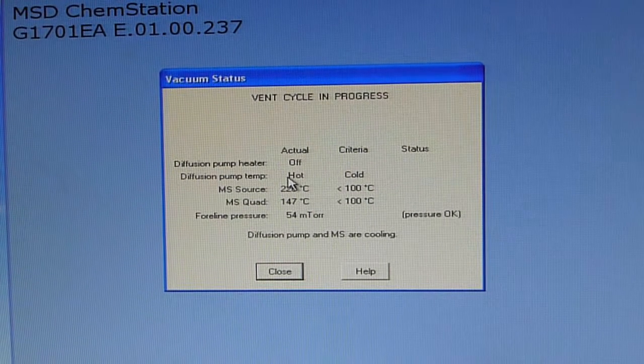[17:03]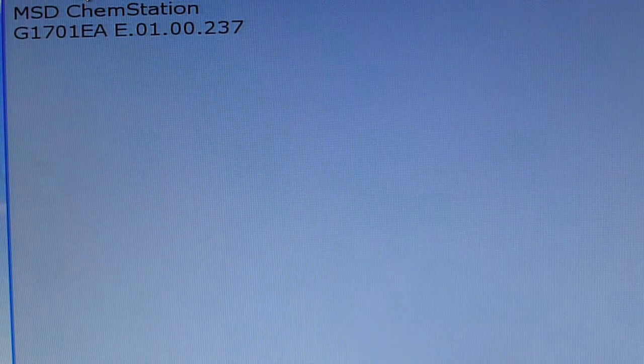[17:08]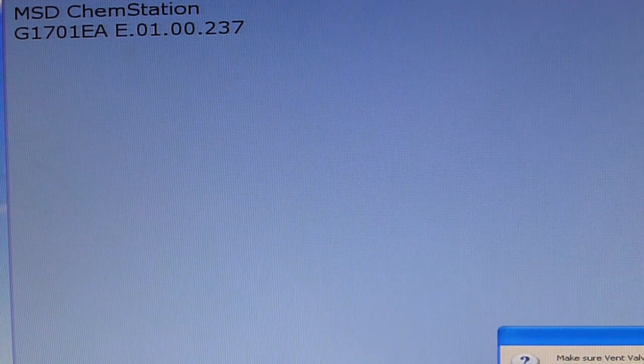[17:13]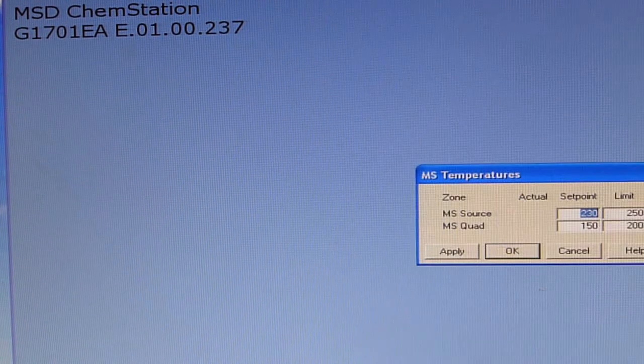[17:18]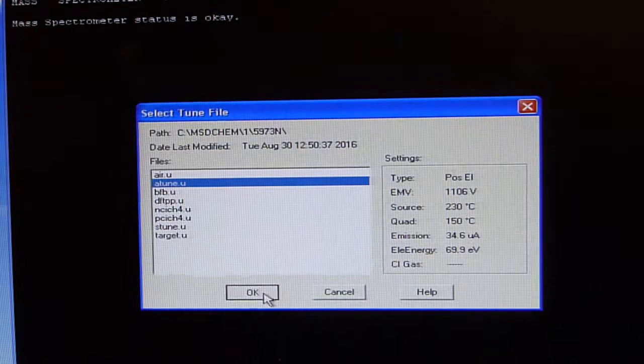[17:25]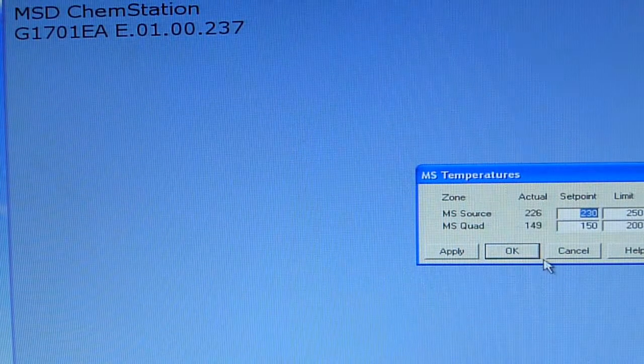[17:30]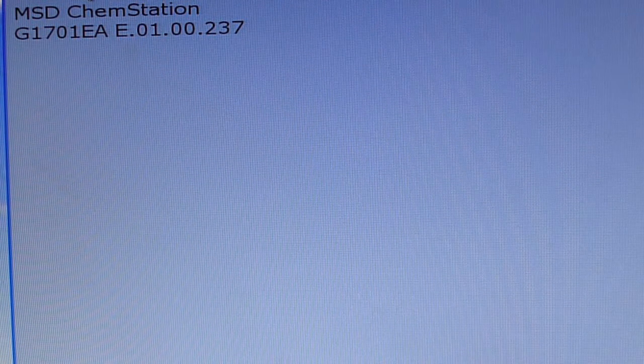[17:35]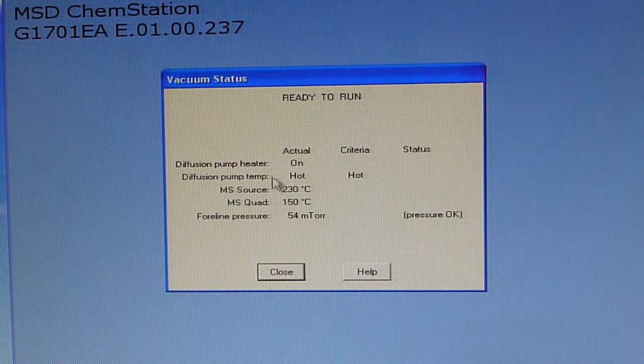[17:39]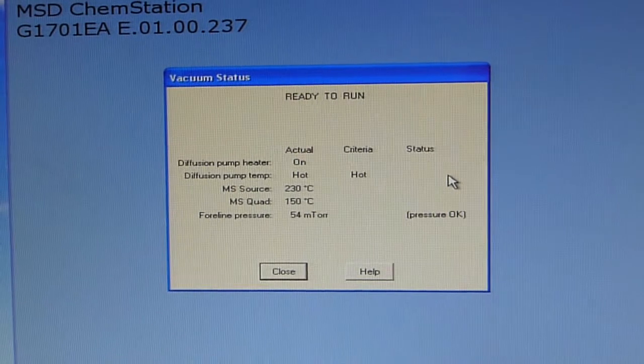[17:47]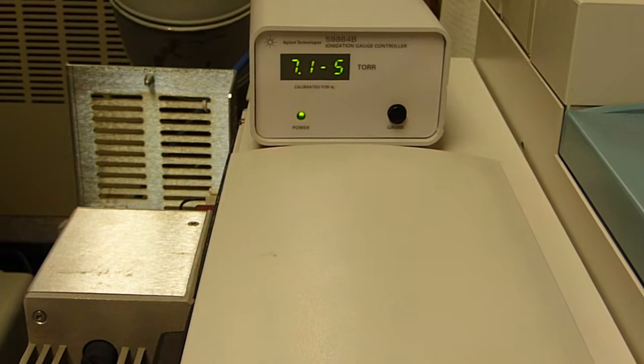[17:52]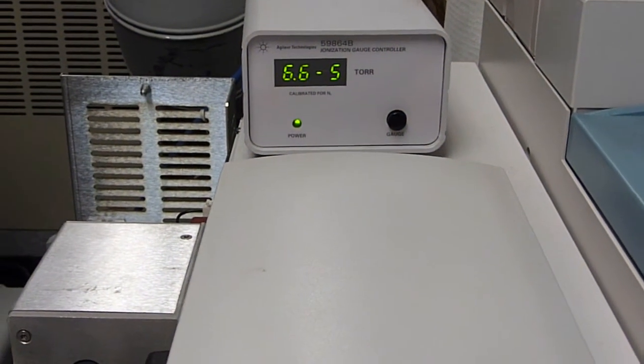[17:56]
And let's see, vacuum status. Okay, so now it says diffusion pump actual heater is off. Getting back to where it says the vacuum status. All right, and so now diffusion pump heater is back on. It's hot. In the meantime, because that heater's been off, the vacuum did degrade, but you can see with the heater back on, it's starting back down again.
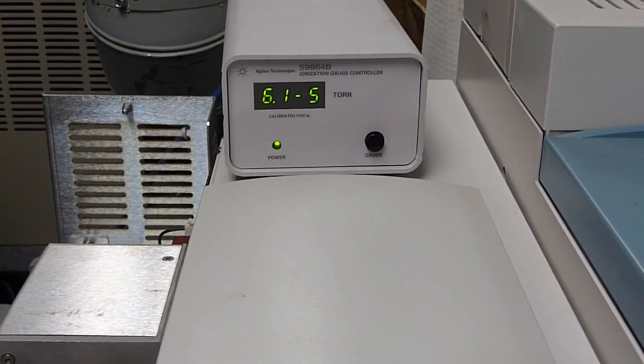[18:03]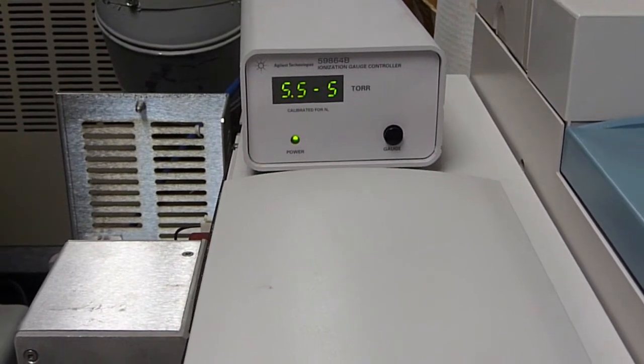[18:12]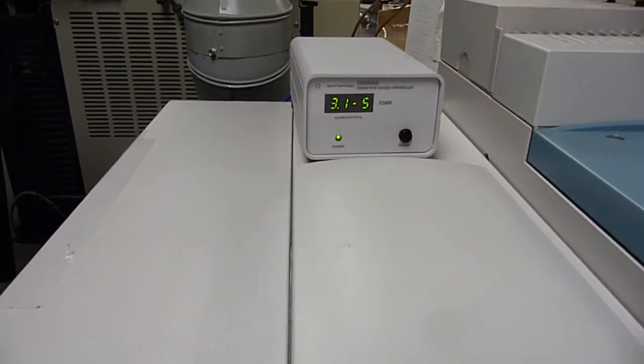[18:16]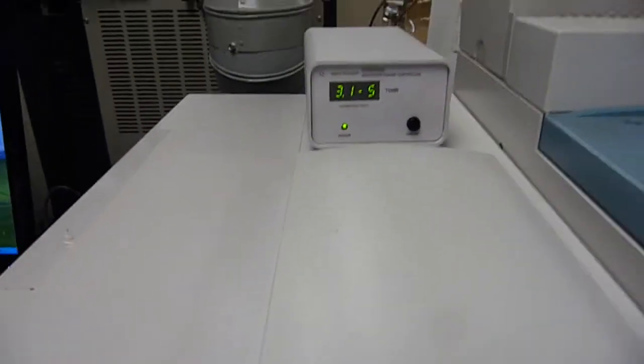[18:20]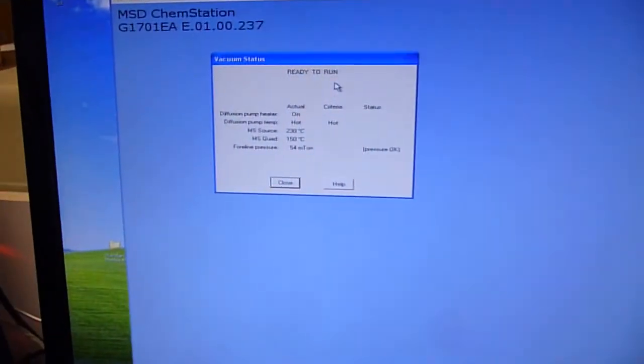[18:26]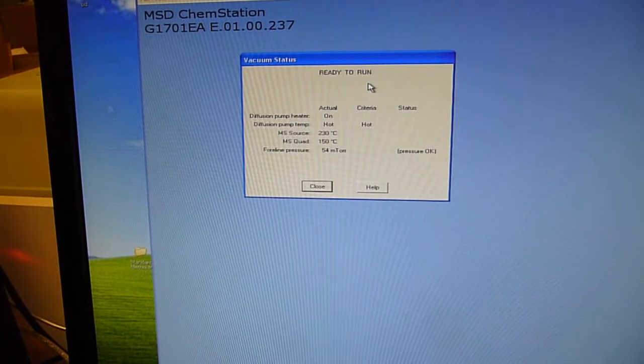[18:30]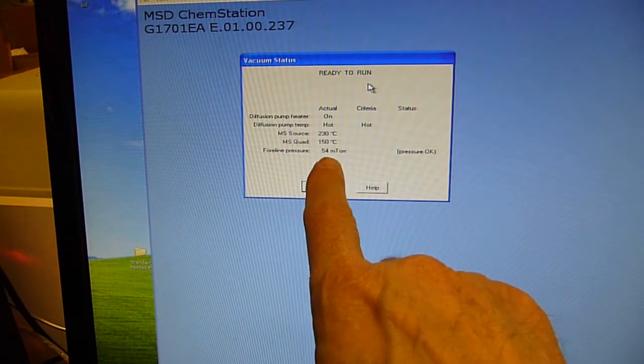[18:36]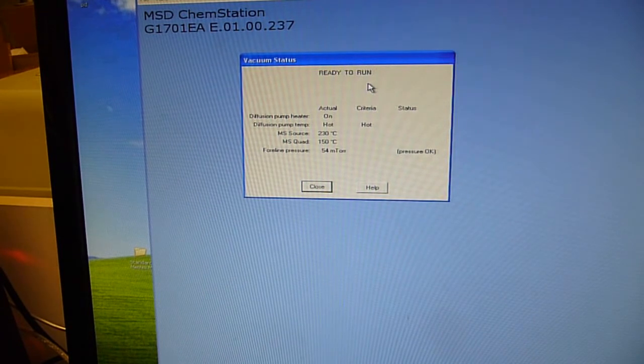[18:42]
So I'm going to stop the video, and I'll turn it back on in 5 minutes. And 300 seconds later, we're back to essentially the same value. And as far as the vacuum status, there might be some discussion as far as, okay, you have the rough pump 2 meters away. Is that going to affect foreline pressure? Well, actually, foreline pressure is pretty good, so having that extra length of the tubing in order to trap any suck back from the rough pump is also a philosophy that we tend to follow here.